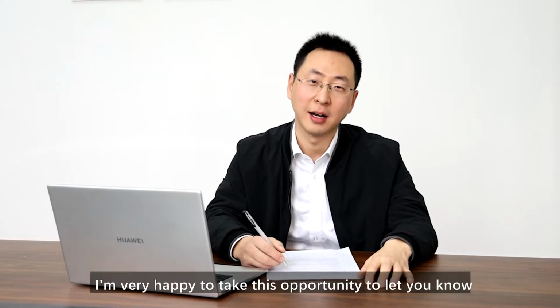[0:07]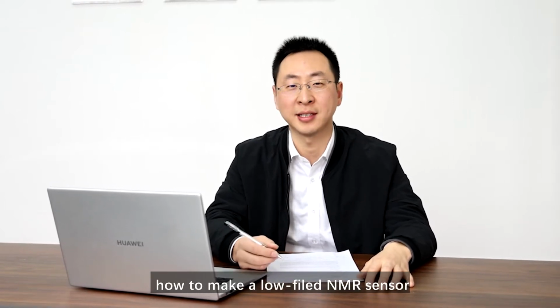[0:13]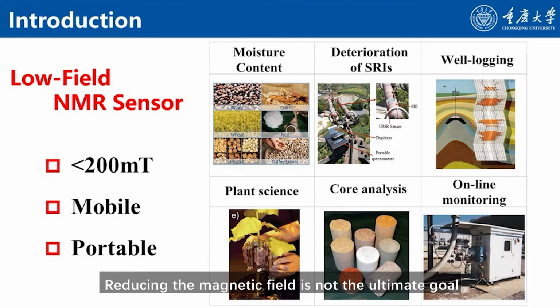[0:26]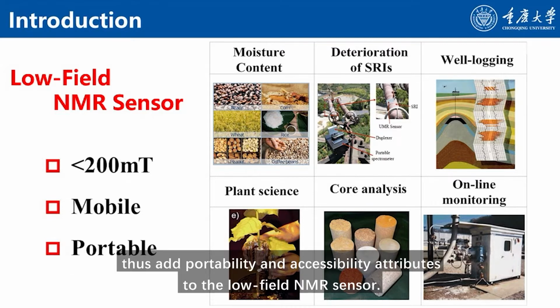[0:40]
Hello everyone. I'm very happy to take this opportunity to let you know how to make a low field NMR sensor. Generally, an NMR sensor with magnetic field below 200 millitesla would be called a low field NMR sensor. Reducing the magnetic field is not the ultimate goal. The goal is to reduce the volume and weight of an NMR sensor by reducing magnetic field, thus adding portability and accessibility attributes to the low field NMR sensor.
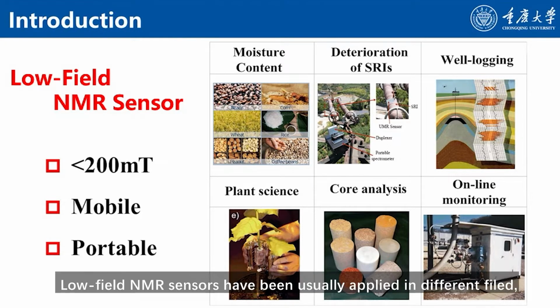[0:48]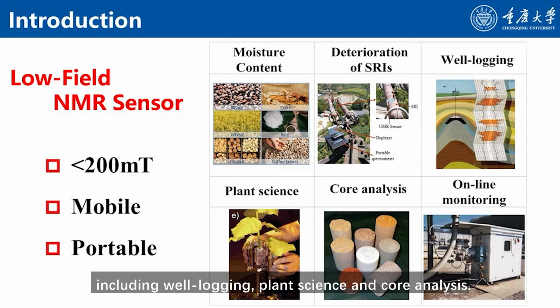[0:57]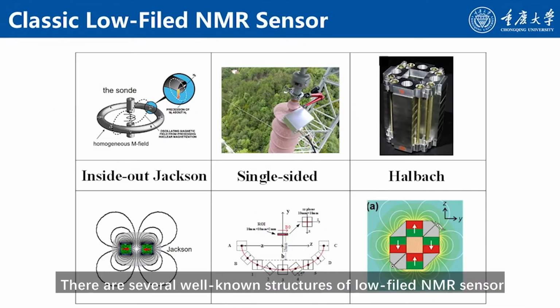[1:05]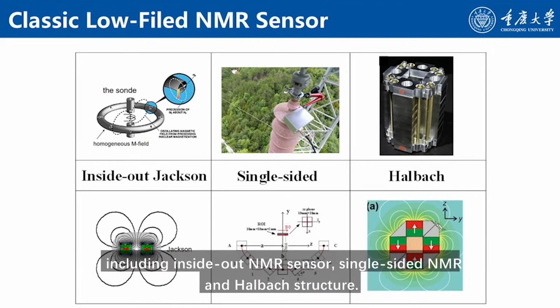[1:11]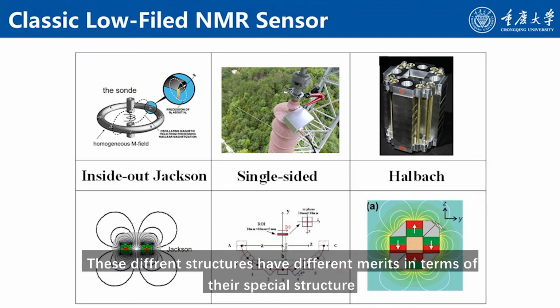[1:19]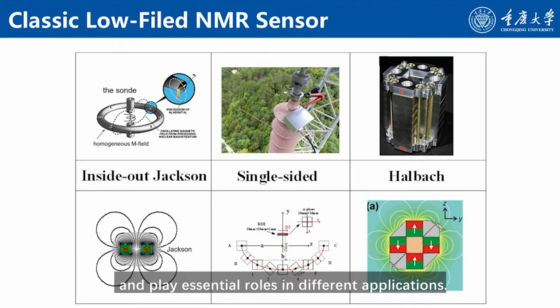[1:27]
Low field NMR sensors have been usually applied in different fields, including wireline logging, plant science, and core analysis. There are several well-known structures of low field NMR sensor, including inside-out NMR sensor, single-sided NMR, and Halbach structure. These different structures have different merits in terms of their spatial structure and are playing essential roles in different applications.
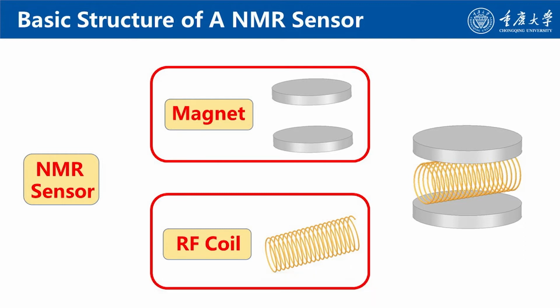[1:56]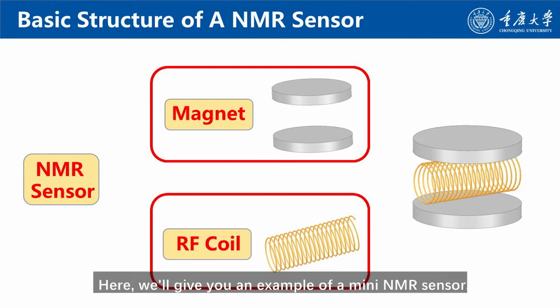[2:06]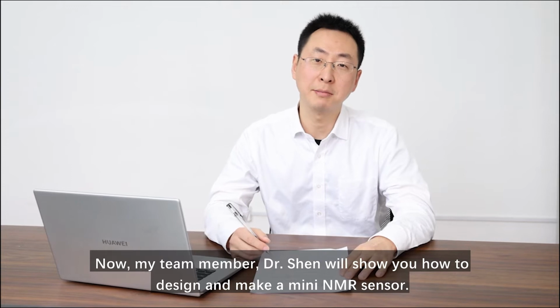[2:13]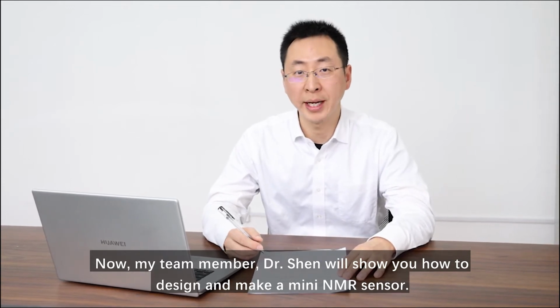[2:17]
Concretely, an NMR sensor consists of a magnet and a radio frequency coil. The magnet generates the background static magnetic field, and the RF coil excites a sample and receives the NMR signal. It is worth noting that when building an NMR sensor, the background field and RF field should be perpendicular to each other. Here we will give you an example of a mini NMR sensor. Now, my team member, Dr. Shen, will show you how to design and make a mini NMR sensor.
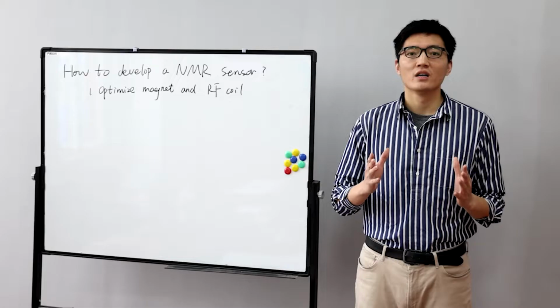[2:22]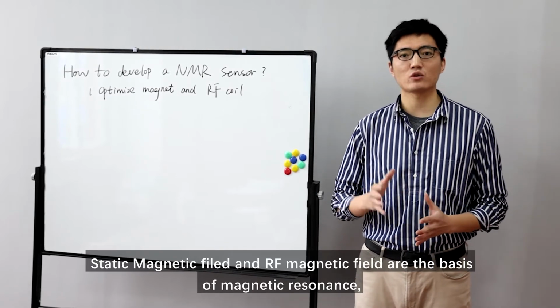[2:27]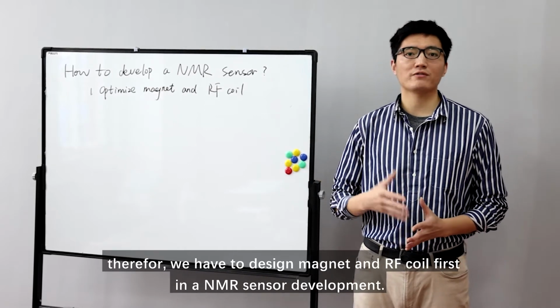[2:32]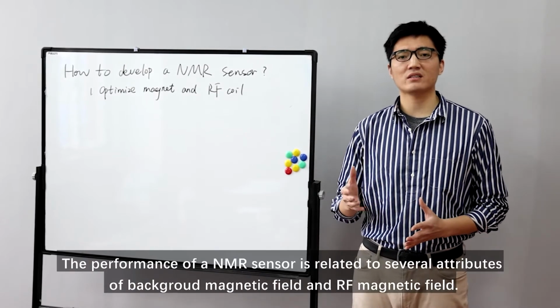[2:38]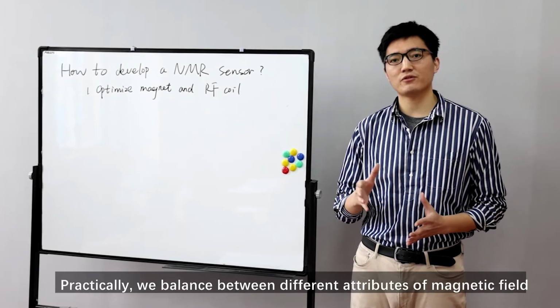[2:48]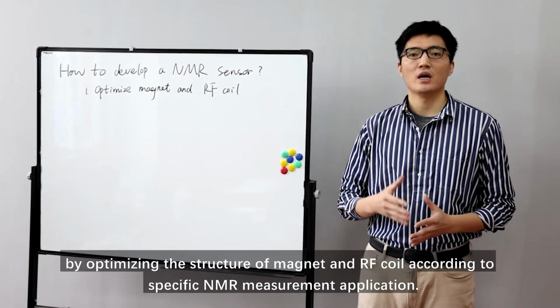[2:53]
Static magnetic field and RF magnetic field are the basis of magnetic resonance. Therefore, we have to design magnets and RF coil first in NMR sensor development. The performance of an NMR sensor is related to several attributes of background magnetic field and RF magnetic field. Practically, we balance between different attributes of magnetic field by optimizing the structure of magnets and RF coil according to the specific NMR measurement application.
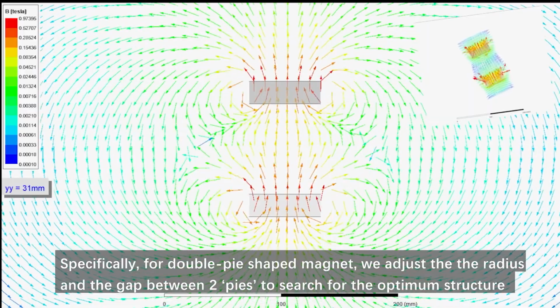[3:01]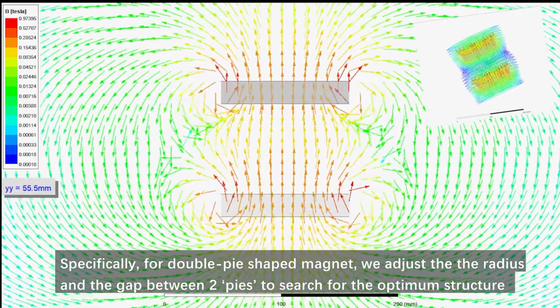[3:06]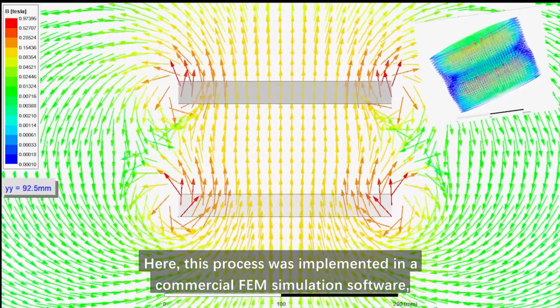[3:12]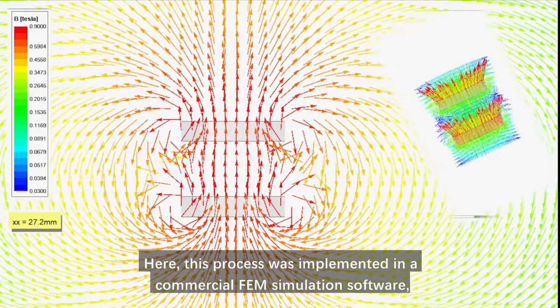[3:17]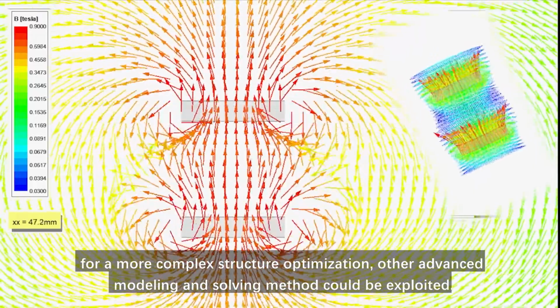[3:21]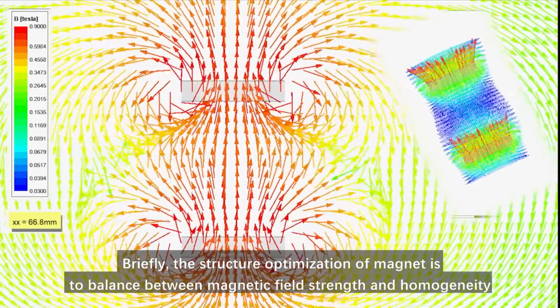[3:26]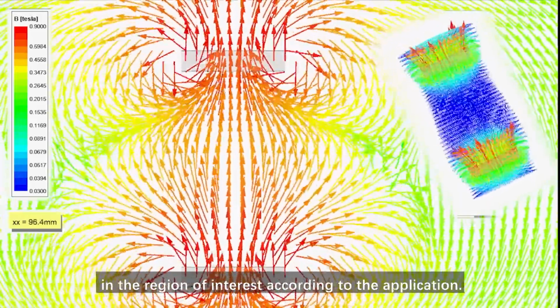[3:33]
Specifically, for the double pie-shaped magnet, we adjust the radius and the gap between two pies to search for the optimum structure. Here, this process was implemented in a commercial finite element method simulation software. For a more complex structure optimization, other advanced modeling and solving methods could be exploited. Briefly, the structure optimization of the magnet is to balance between magnetic field strength and homogeneity in the region of interest according to the application.
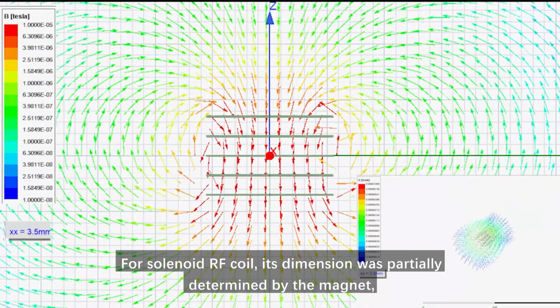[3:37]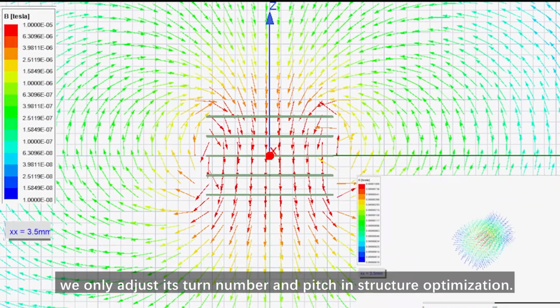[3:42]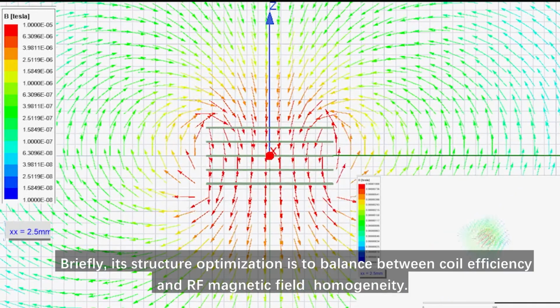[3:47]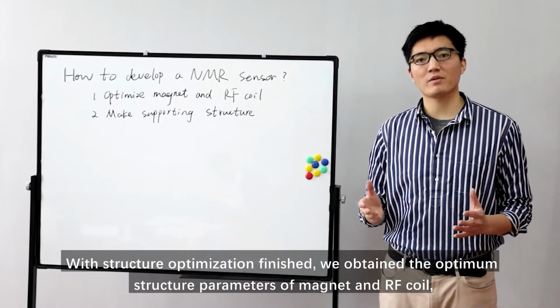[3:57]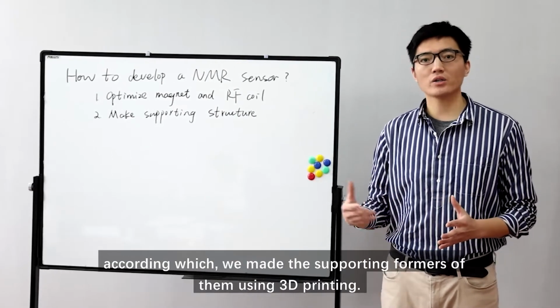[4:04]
For the solenoid RF coil, its dimension was partially determined by the magnet. We only adjust its turn number and pitch in structure optimization. Briefly, the structure optimization is to balance between coil efficiency and RF magnetic field homogeneity. With the structure optimization finished, we obtain the optimal structure parameters of magnets and RF coil, according to which we make the supporting formers of them using 3D printing.
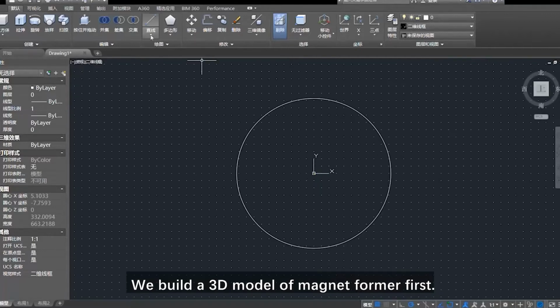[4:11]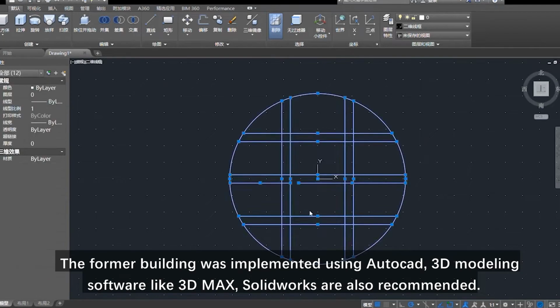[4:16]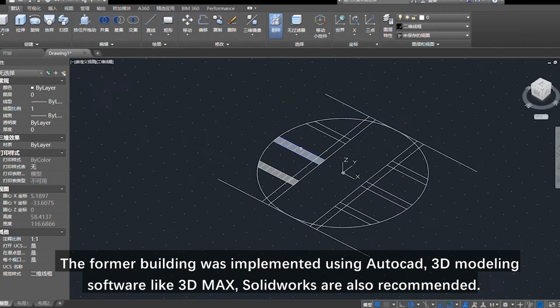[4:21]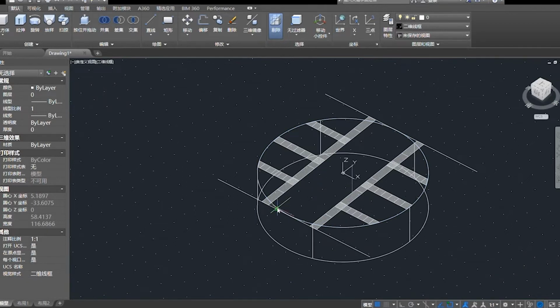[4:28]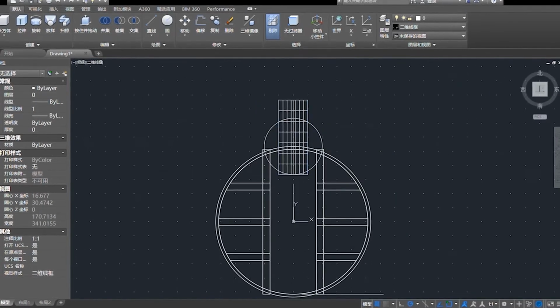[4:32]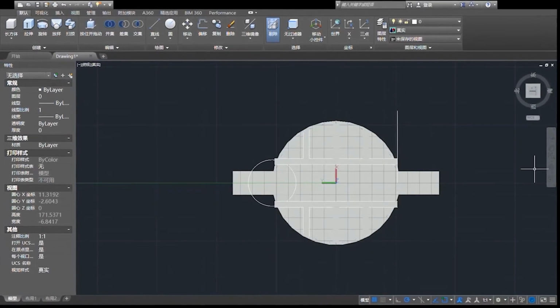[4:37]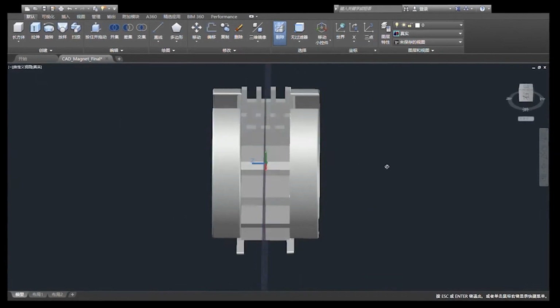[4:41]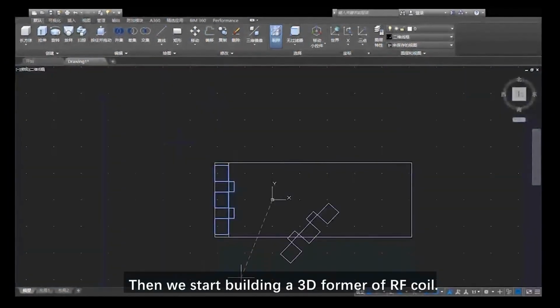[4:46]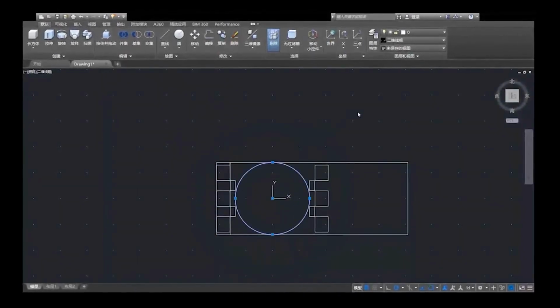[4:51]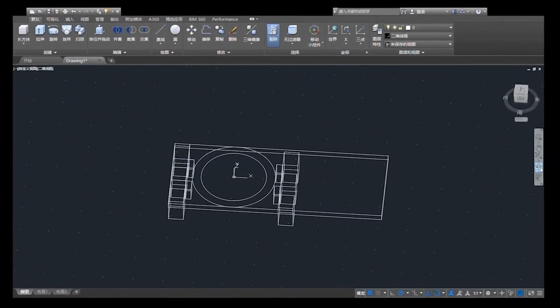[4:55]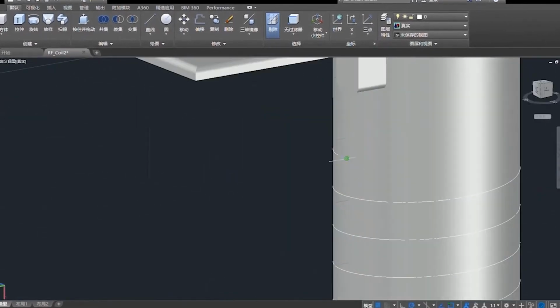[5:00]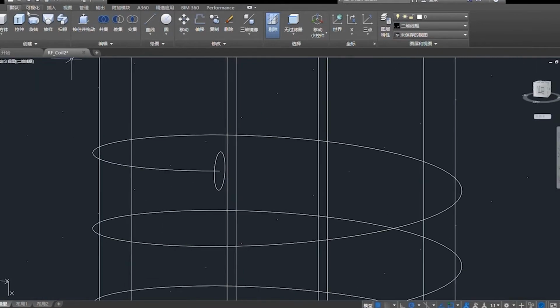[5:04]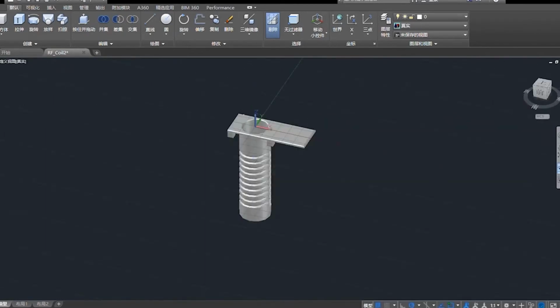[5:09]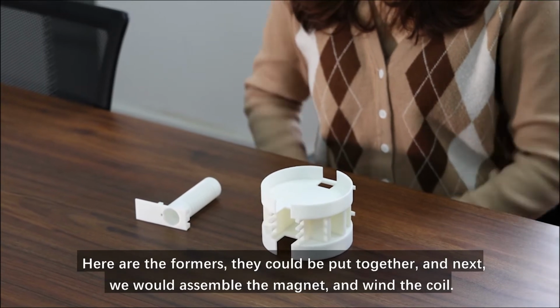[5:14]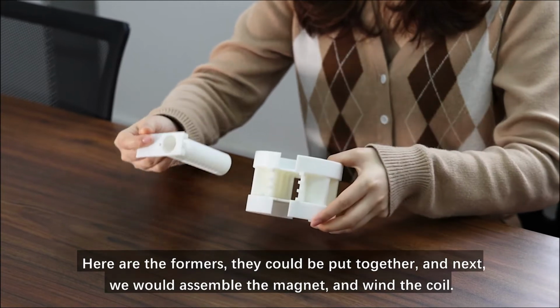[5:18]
We built a 3D model of the magnet former first. The former building was implemented using AutoCAD. 3D modeling software like 3ds Max and SolidWorks are also recommended. Then we start building a 3D former of the RF coil. Here are the formers. They could be put together, and next we would assemble the magnet and wind the coil.
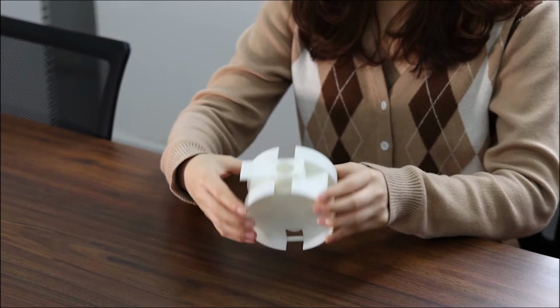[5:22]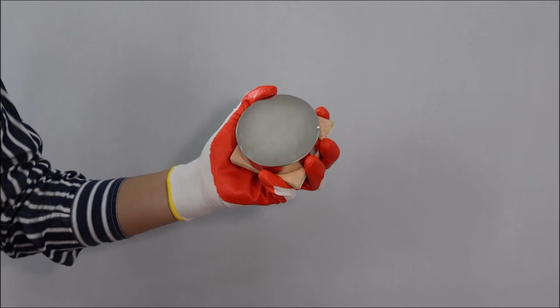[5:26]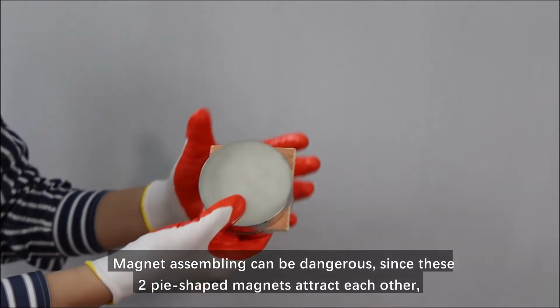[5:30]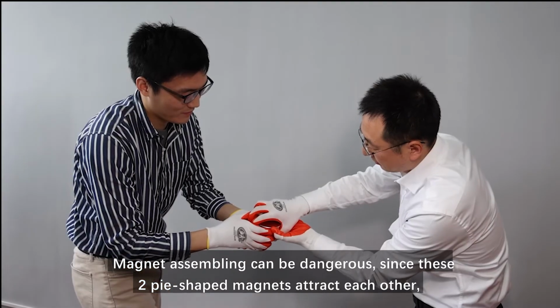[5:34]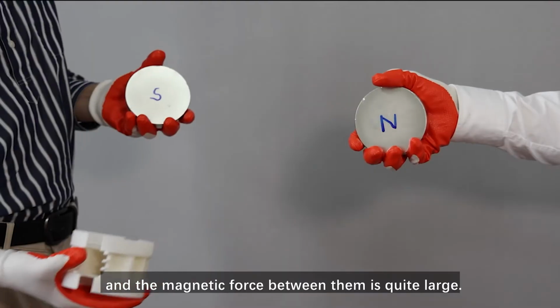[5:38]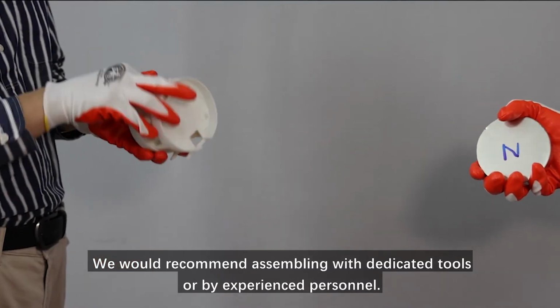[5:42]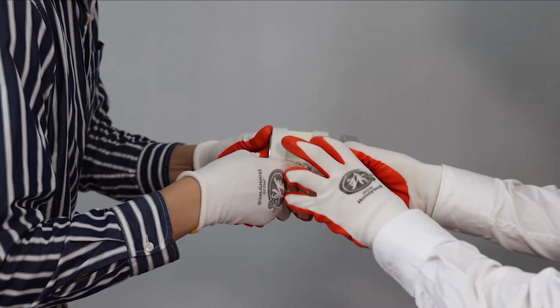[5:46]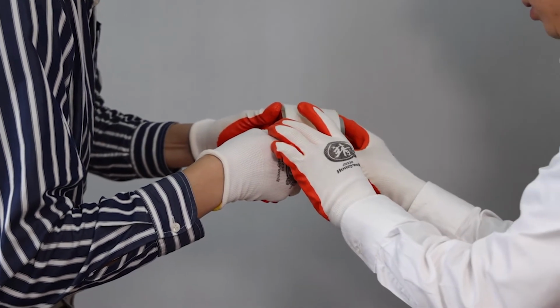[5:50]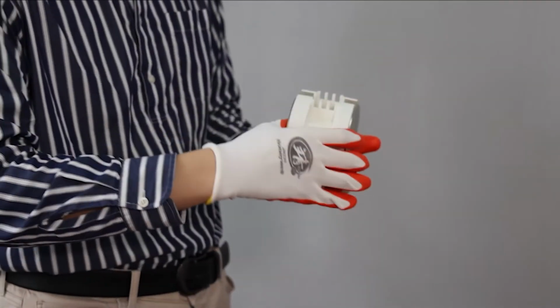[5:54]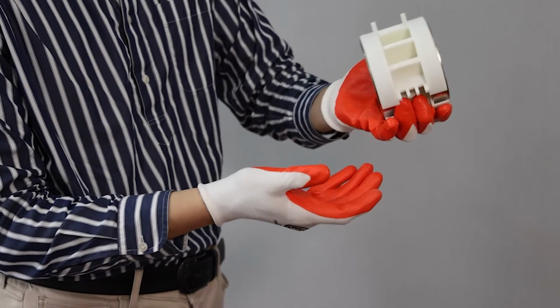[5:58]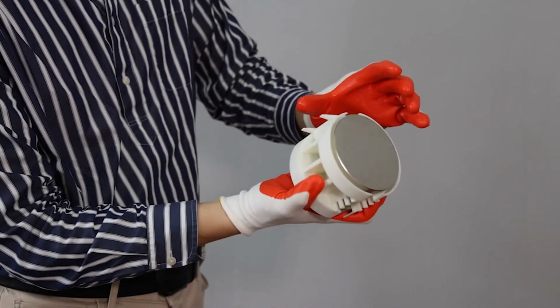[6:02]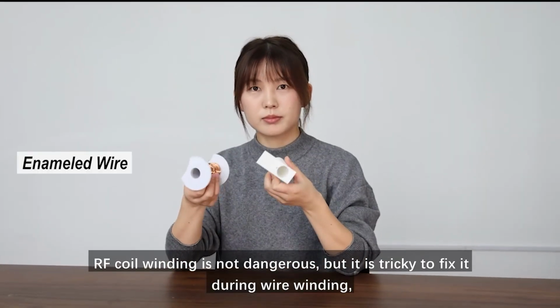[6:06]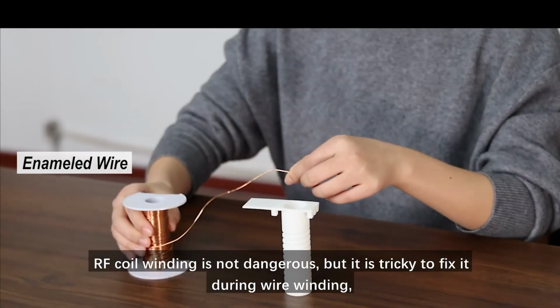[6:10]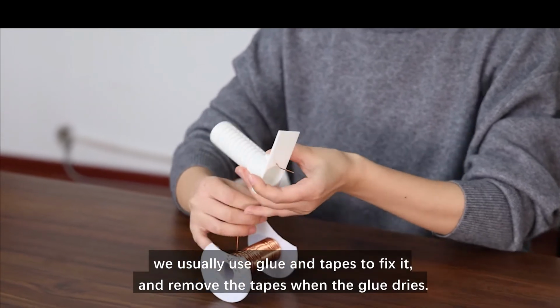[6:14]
Magnet assembling can be dangerous, since these two pie-shaped magnets attract each other, and the magnetic force between them is quite large. We would recommend assembling with dedicated tools or by experienced personnel. Coil winding is not dangerous, but it is tricky to fix it during wire winding. We usually use glue and tapes to fix it, and remove the tapes when the glue dries.
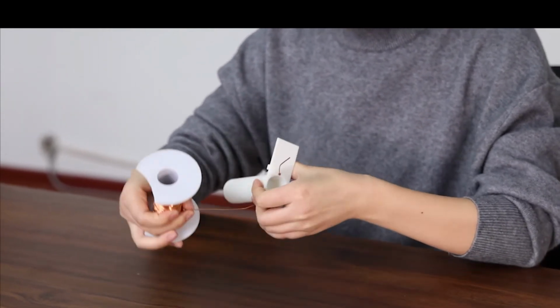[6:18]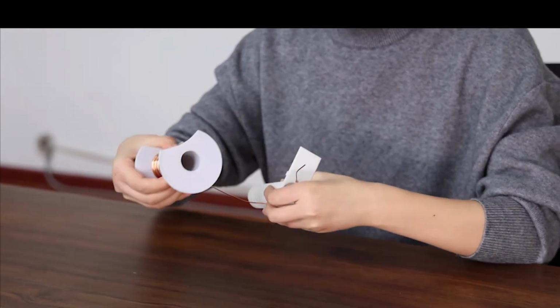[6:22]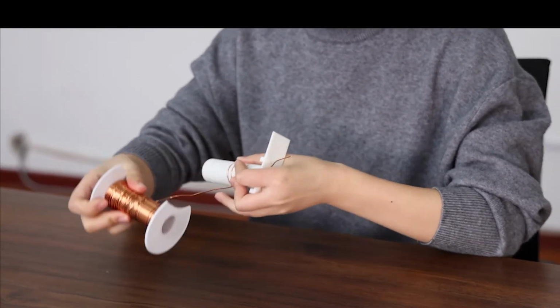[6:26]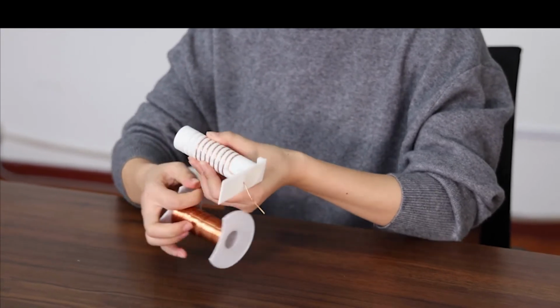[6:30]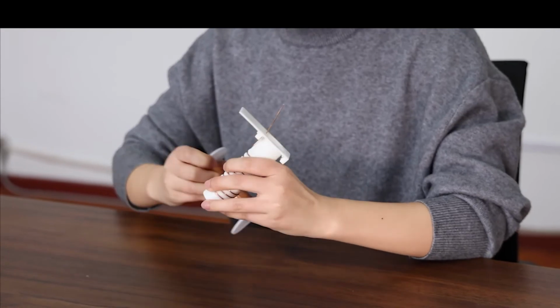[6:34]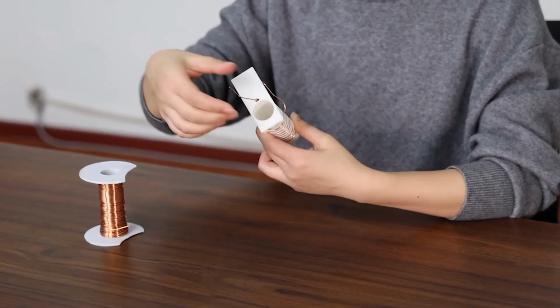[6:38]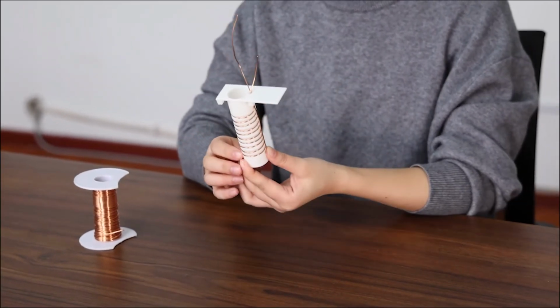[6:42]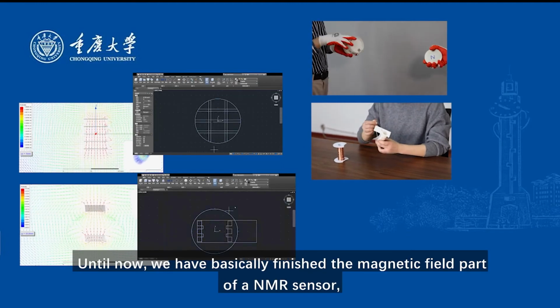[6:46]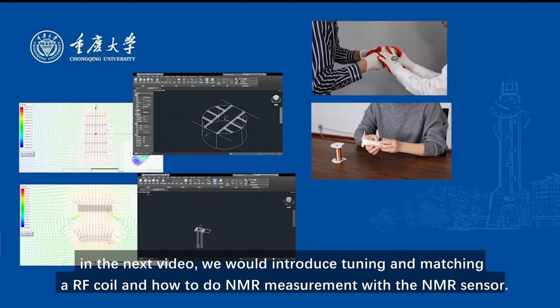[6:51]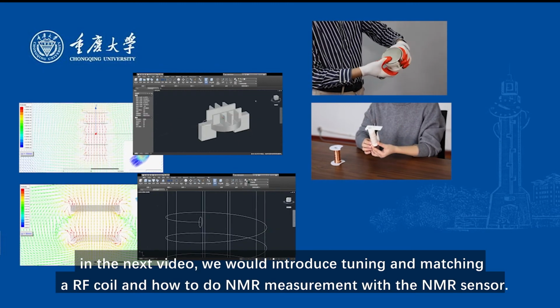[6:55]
Until now, we have basically finished the magnetic field part of an NMR sensor. In the next video, we would introduce tuning and matching a RF coil and how to do NMR measurement with the NMR sensor.